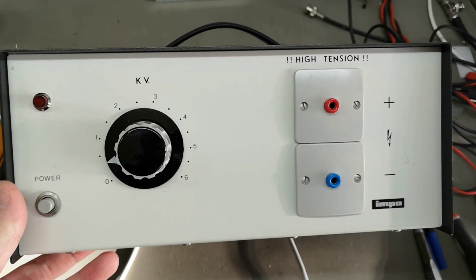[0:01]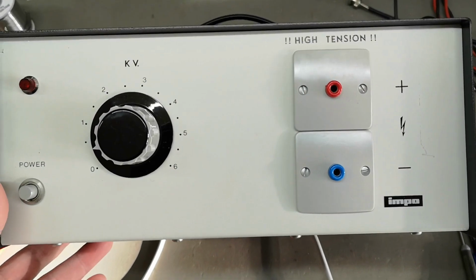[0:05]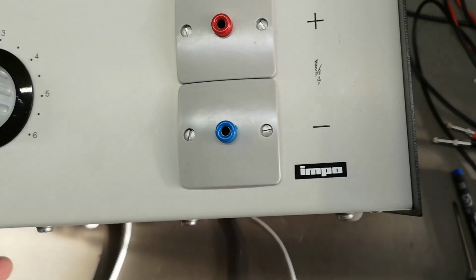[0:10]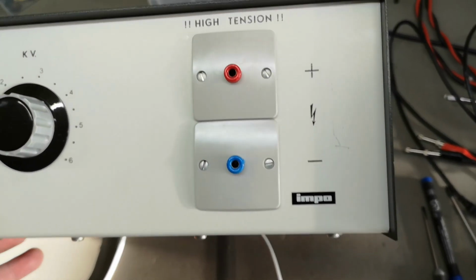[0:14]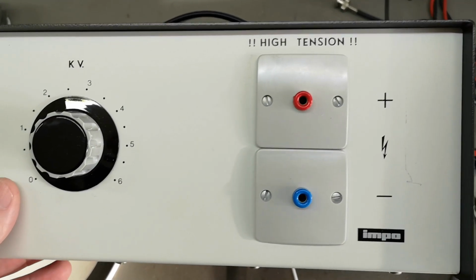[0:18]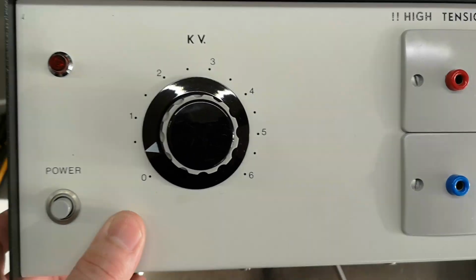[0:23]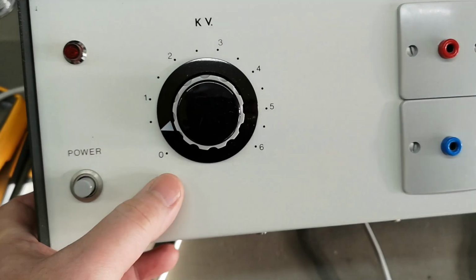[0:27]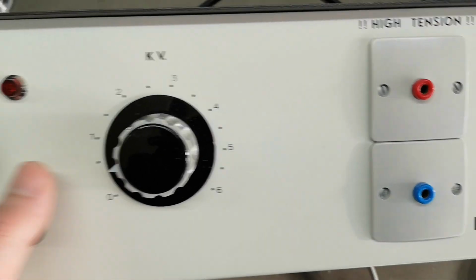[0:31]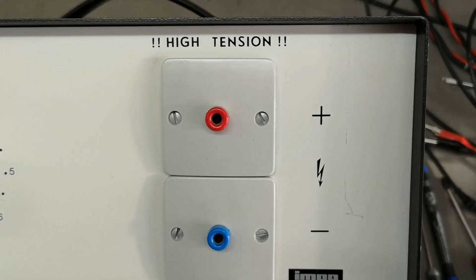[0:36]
This one is another IMPO school laboratory electronics unit, and this is of course a high voltage DC supply. There is no name or number other than that. And I guess it's 0 to 6 kilovolts DC, because we see plus and minus here. High tension.
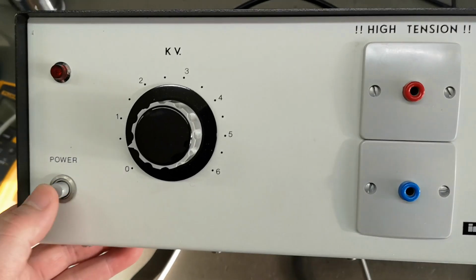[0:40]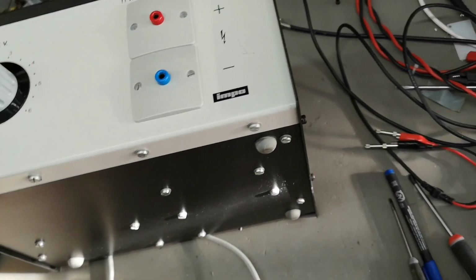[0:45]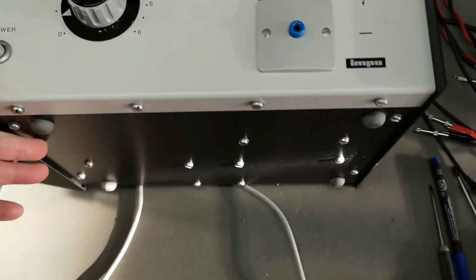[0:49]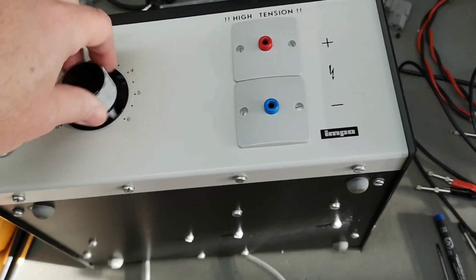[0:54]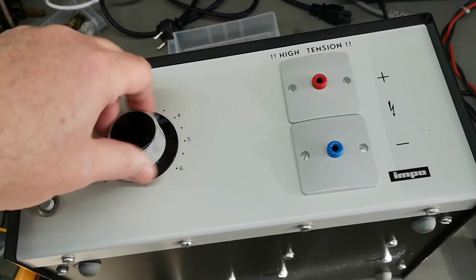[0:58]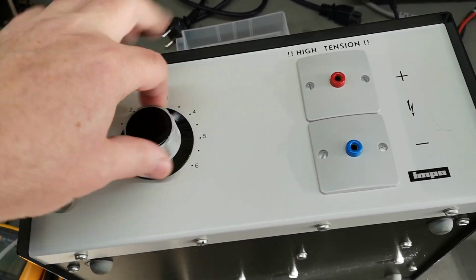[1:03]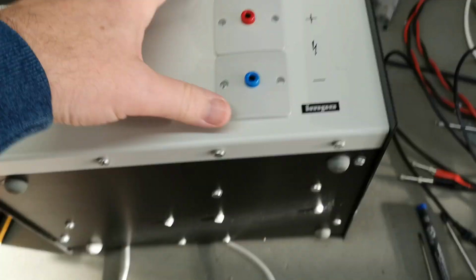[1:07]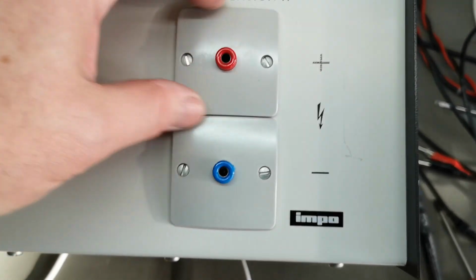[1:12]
And there's no other names or marks or anything on this unit. This feels like it could be one of those Vario transformers, but it feels a little bit weird anyway. Look at that.
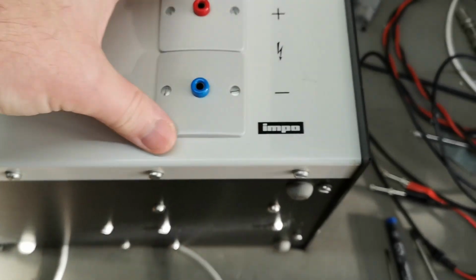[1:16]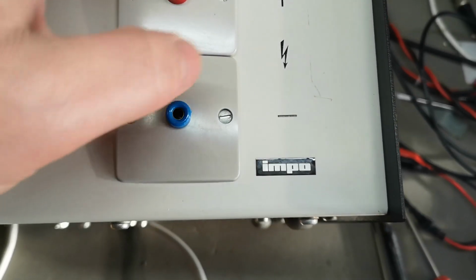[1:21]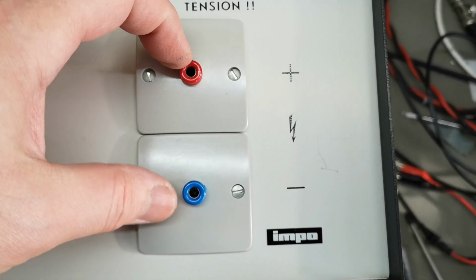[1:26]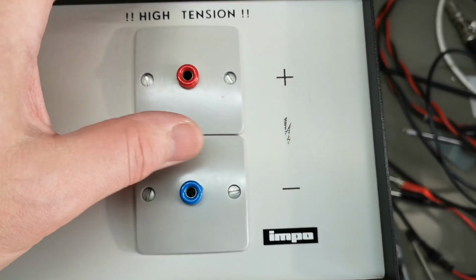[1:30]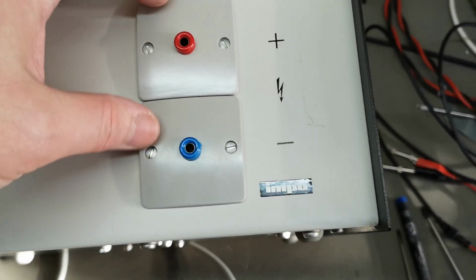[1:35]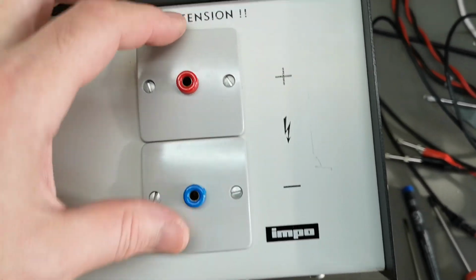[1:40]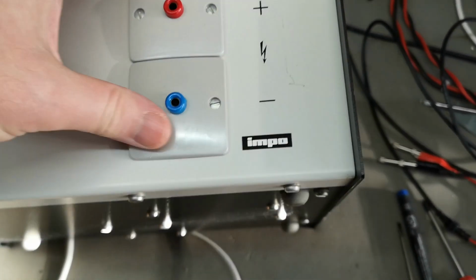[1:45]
So those are the mains voltage install blanks, and then they just drilled a hole and put in the high voltage bananas. And this is actually not a dumb idea, because this type of plastic here is very good for high voltage, a super good isolation, and it's also a fire retardant and very, very safe to use for high voltages. So yeah, why not?
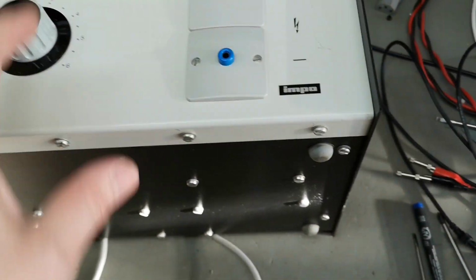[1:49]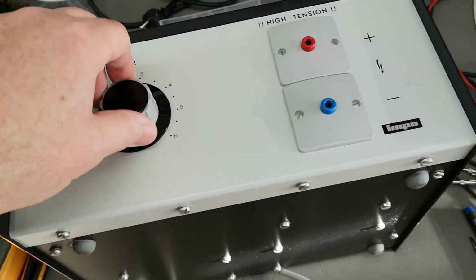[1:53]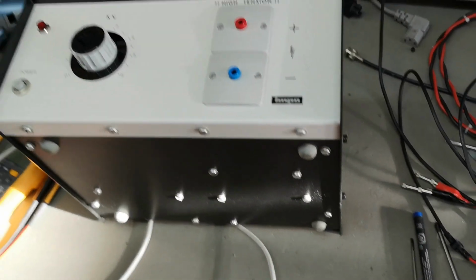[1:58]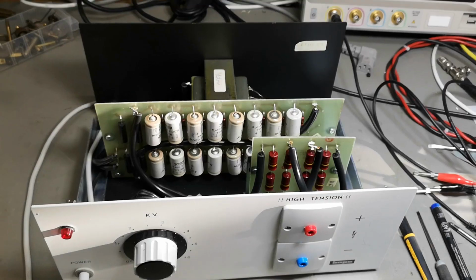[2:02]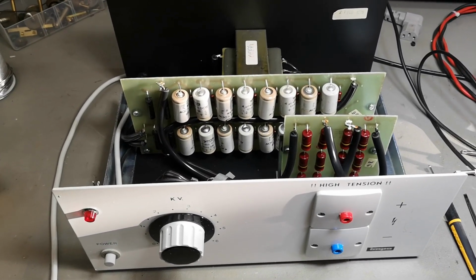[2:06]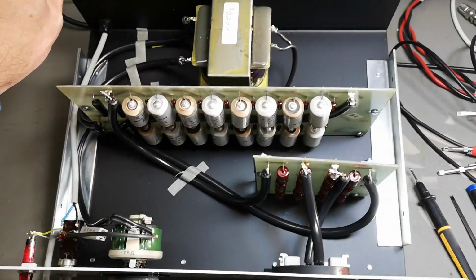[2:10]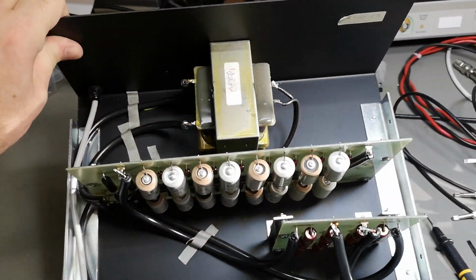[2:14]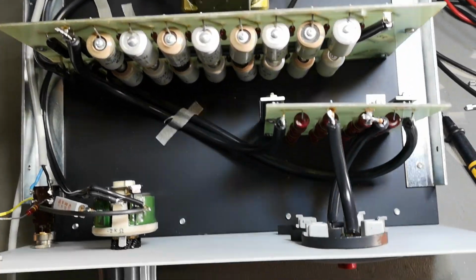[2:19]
I think I need to open this before I plug it in, because this could potentially be a little bit dangerous. So I like to see what is inside before I plug it in. That was a very big surprise to see this unit inside. It is very different from what I guessed.
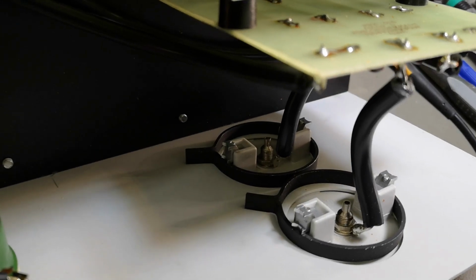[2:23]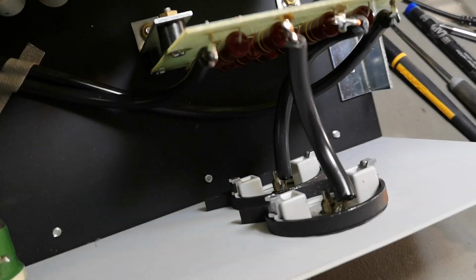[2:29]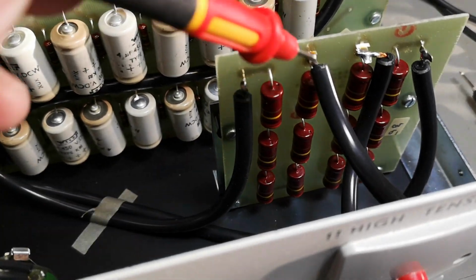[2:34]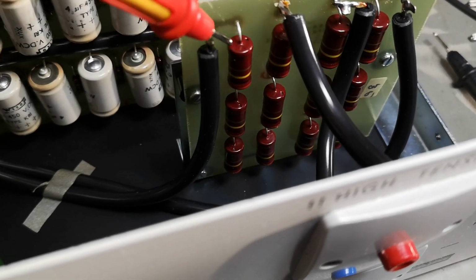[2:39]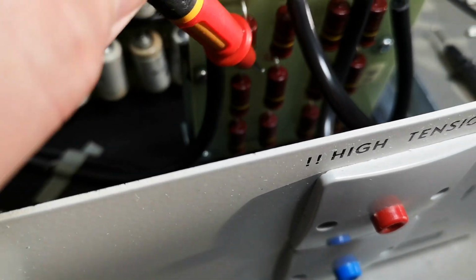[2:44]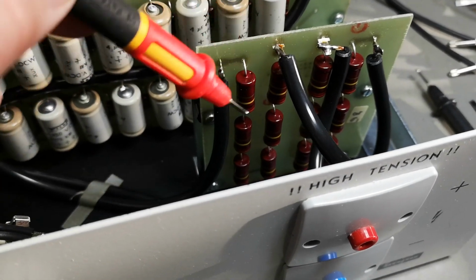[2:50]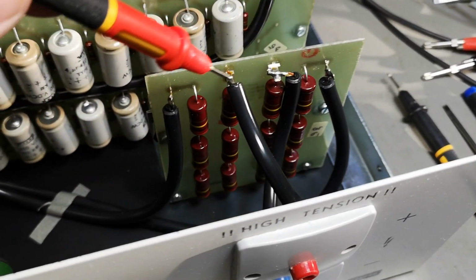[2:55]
That is actually really nice design with the banana plugs. So far so good. So that will be an output current limit board. The high power resistors here, that will be 200 kilo ohms each. So that's 1.2 mega ohm in the positive and 1.2 mega ohm in the negative. So it's symmetric, so that's quite nice.
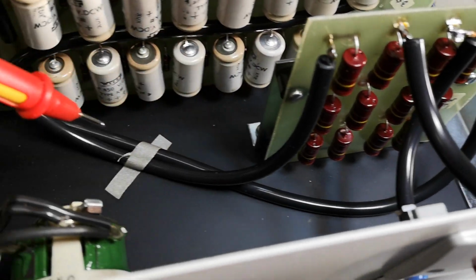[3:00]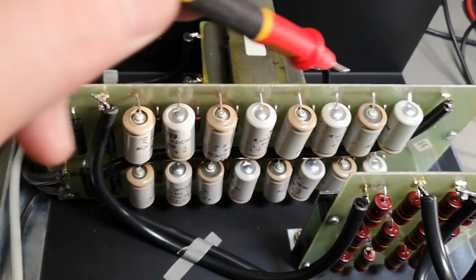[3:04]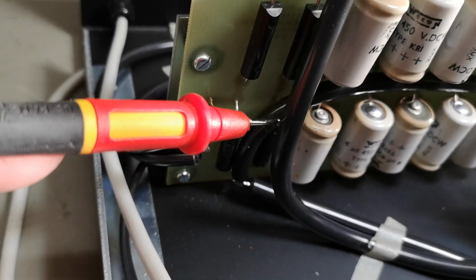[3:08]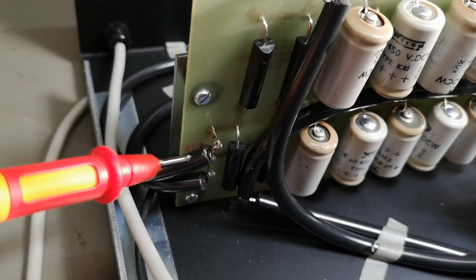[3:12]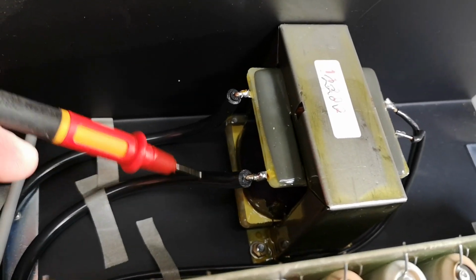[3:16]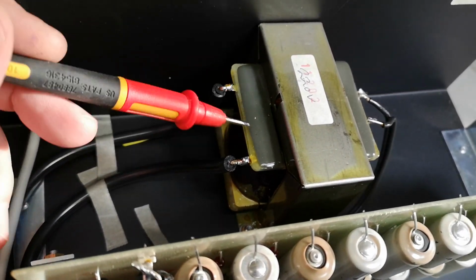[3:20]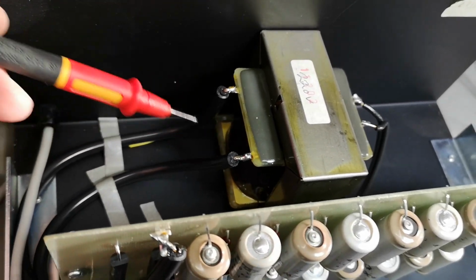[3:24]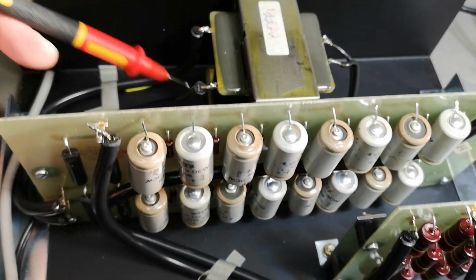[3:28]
And then the high voltage goes to a rectifier and capacitor board. The rectifier is actually a bridge rectifier, and it's connected directly to a big high voltage transformer. So this one does indeed deliver all the high voltage directly. There aren't any doublers, triplers, or any other fancy things.
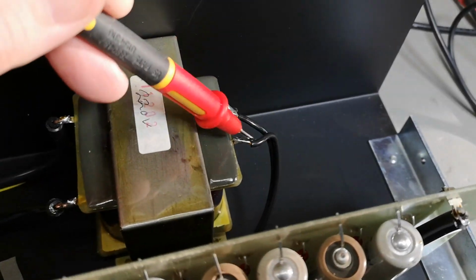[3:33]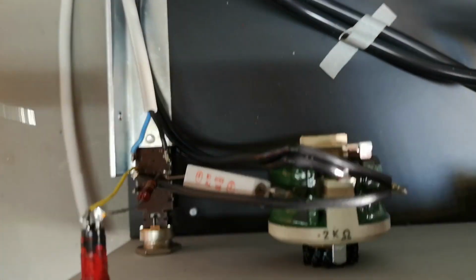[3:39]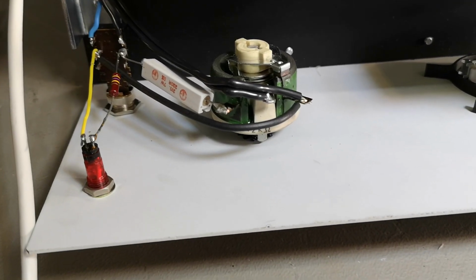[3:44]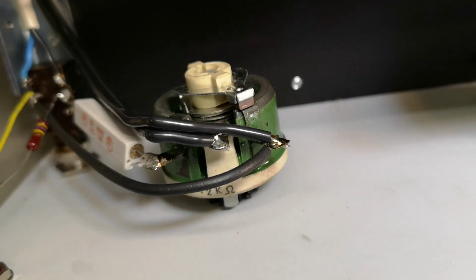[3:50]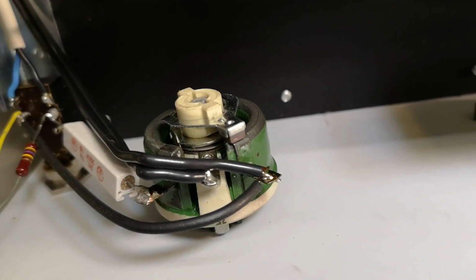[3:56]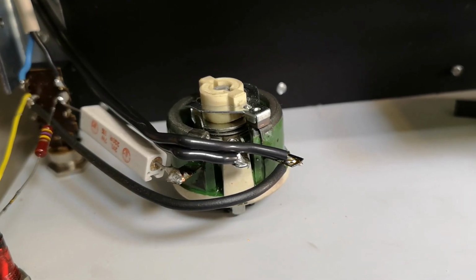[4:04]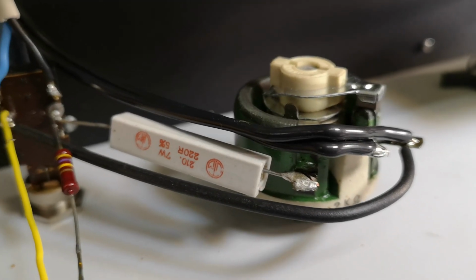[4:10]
And this is a 220 volt type. So this is the mains input. Let's follow that wire. It goes to a voltage divider. Really? So how can that be accurate? If you look at the two big fat wires here to the right, that is the output. So at the moment, as you see the pot here, that is to the low, because now the transformer input is shorted. So in this case, an idle power is going through the resistors.
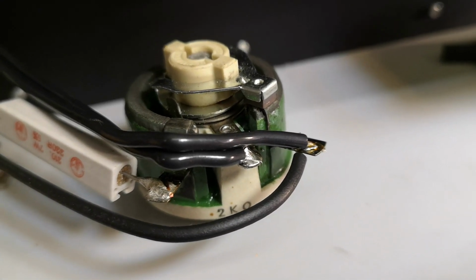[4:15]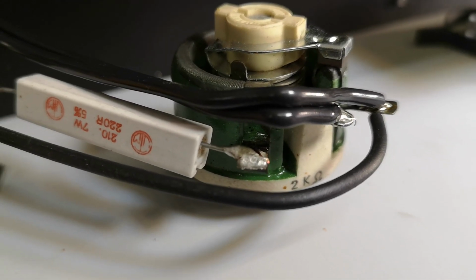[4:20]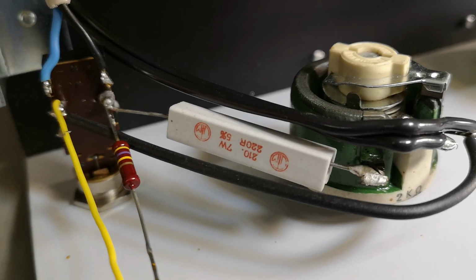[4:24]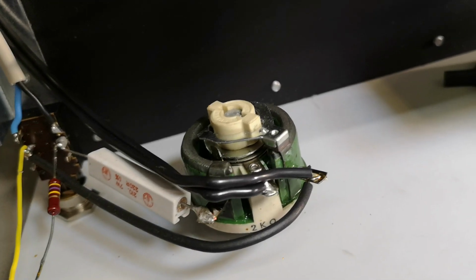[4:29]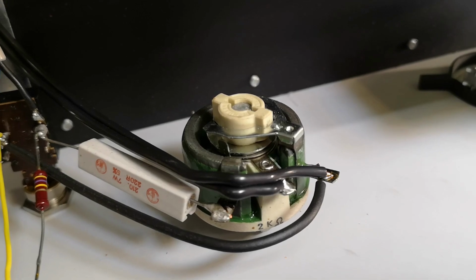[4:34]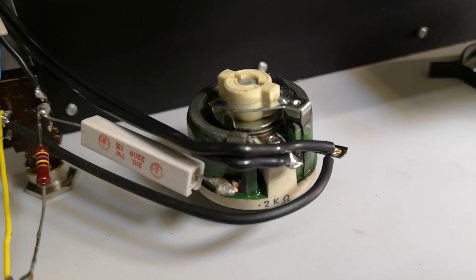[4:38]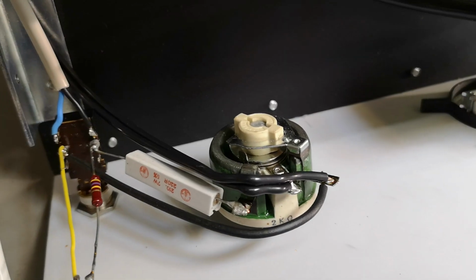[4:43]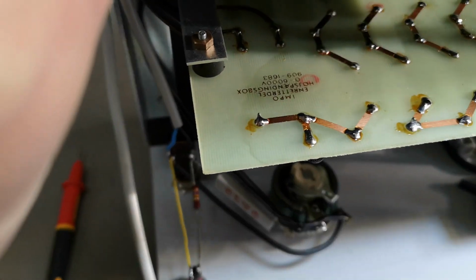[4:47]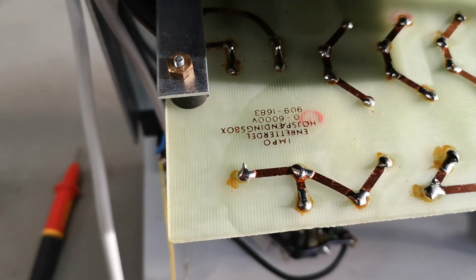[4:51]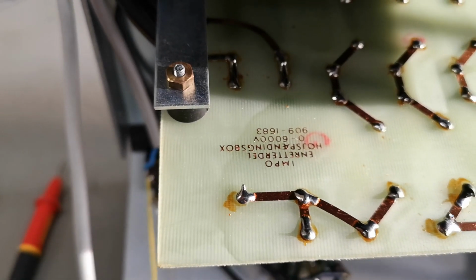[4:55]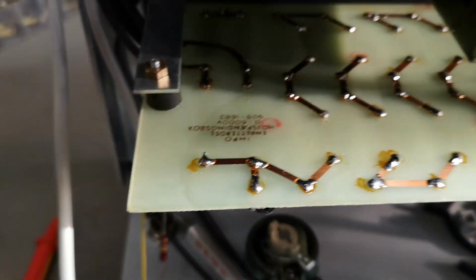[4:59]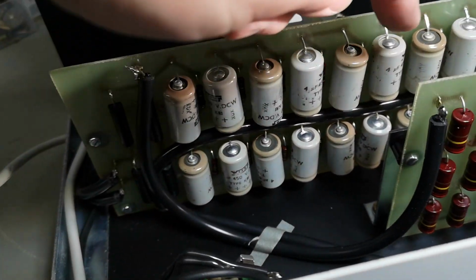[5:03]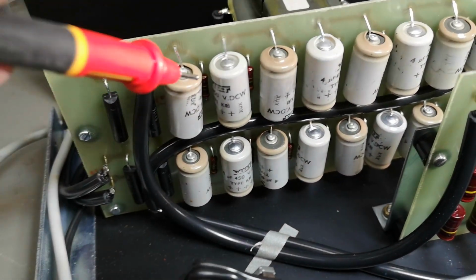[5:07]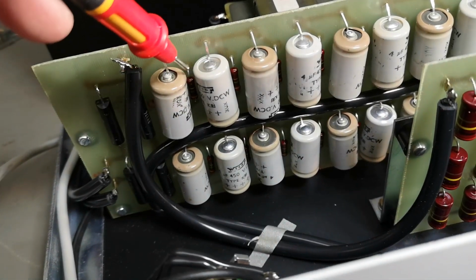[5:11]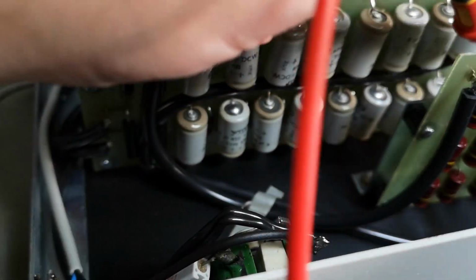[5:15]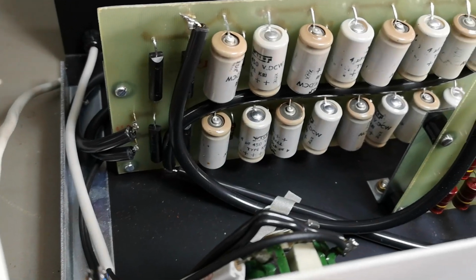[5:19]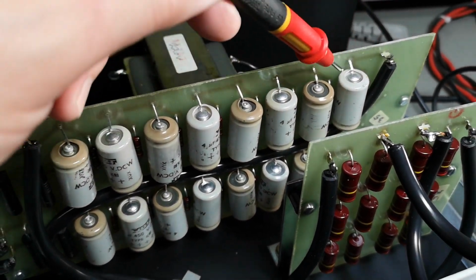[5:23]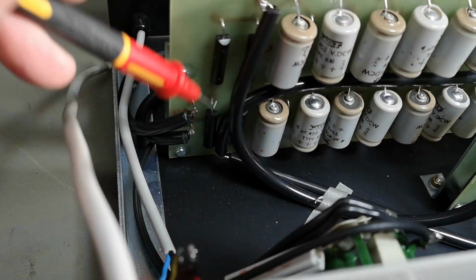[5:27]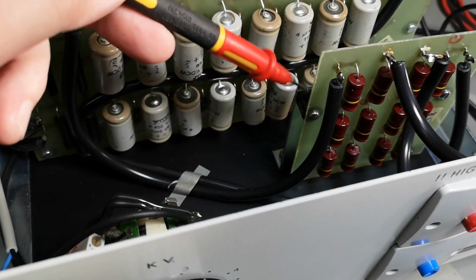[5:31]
So let's look a little bit at the rectifier board. There's a little bit of information here. It says high voltage power supply, 0 to 6 kilovolts, and so on. And all those capacitors are in series, and each of them has an individual 1 mega ohm bleeder resistor. So the voltage will be spread out evenly in case every capacitor is working, obviously. And this is the negative side of the capacitor bank, and it is connected to the negative side of the bridge, and then out to the current limiter board.
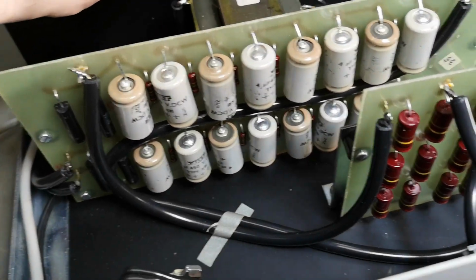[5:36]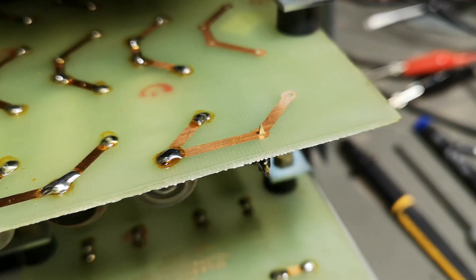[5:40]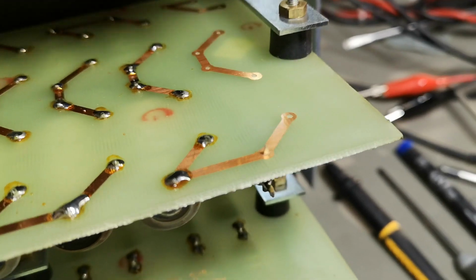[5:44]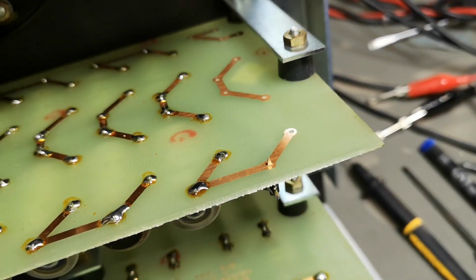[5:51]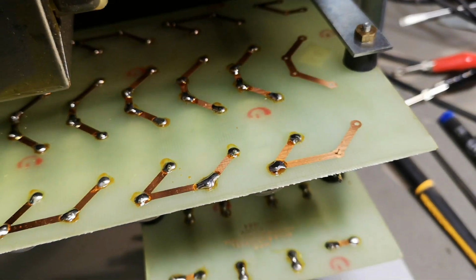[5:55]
But look at that little detail here, what I saw. What do you think about this soldering? I mean, oops. Isn't that a little bit embarrassing? But it didn't fall out. Well, come on, somebody forgot to solder this. This is not good enough. And how can you assemble this?
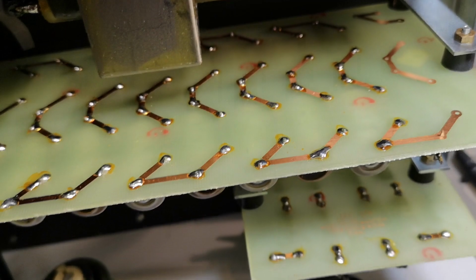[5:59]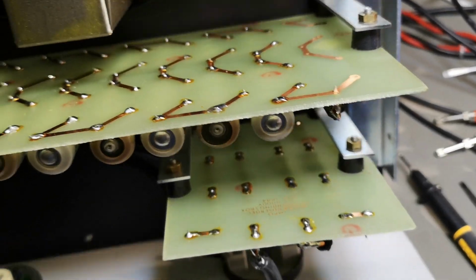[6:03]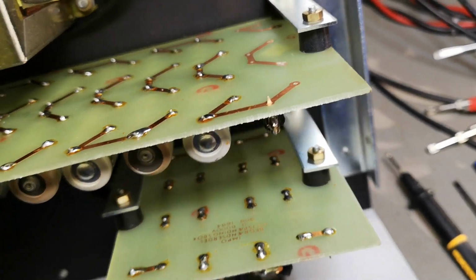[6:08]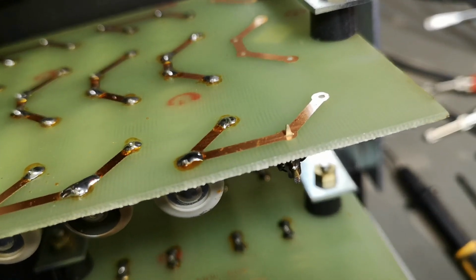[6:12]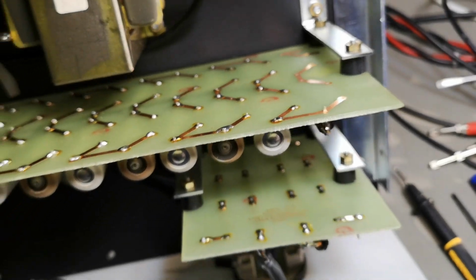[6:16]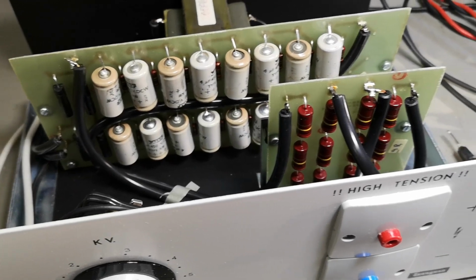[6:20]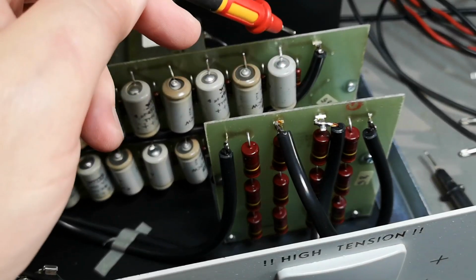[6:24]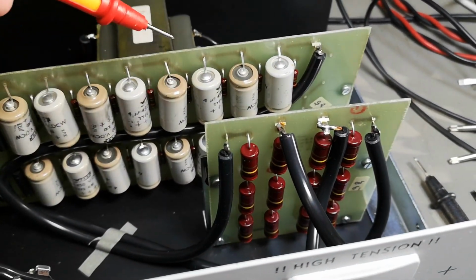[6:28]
First you make the board, and then you put it in the case, then you attach the wire here. I mean, you need to have a little bit of understanding of quality. This is not quality, is it? So what kind of a kit assembled this at a factory? I don't know. Well, that is not a good sign of their education level or understanding of what is good and bad.
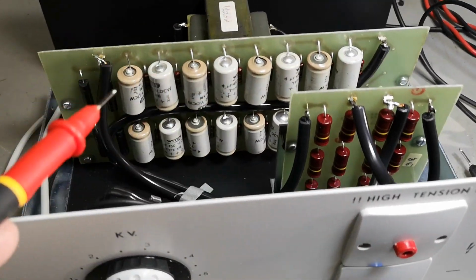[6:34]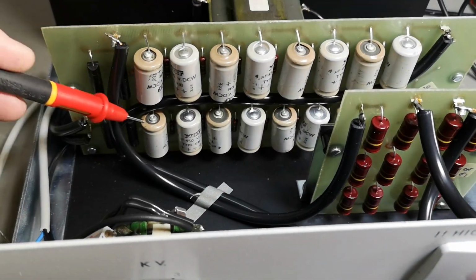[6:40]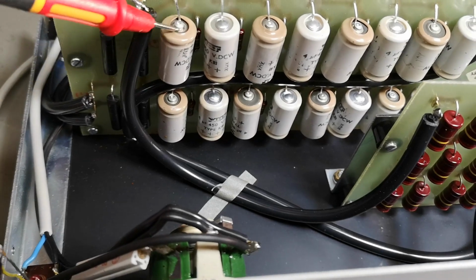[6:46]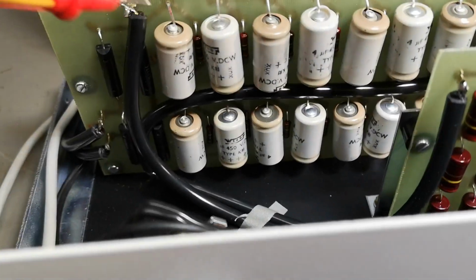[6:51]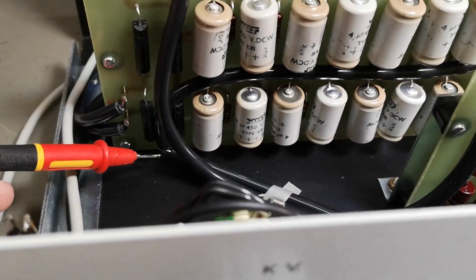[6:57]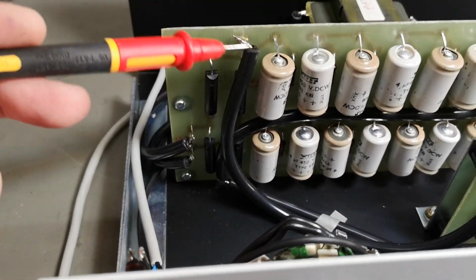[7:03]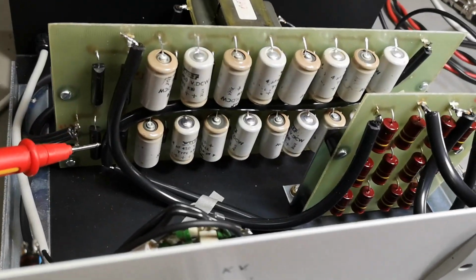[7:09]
So I think I will try and power this up now, really slow and carefully, and see if I get equal voltages on all the capacitors, because otherwise I could very easily create a fatal problem here with shorted capacitors or something like that. So each capacitor here can do 450 volts, so that means I will just crank up the voltage to 450 volts total voltage on this point, and then I will measure if I get exactly the same voltage on all capacitors before I proceed to maximum voltage.
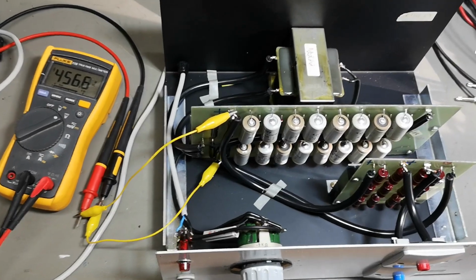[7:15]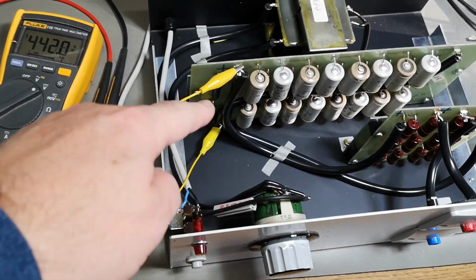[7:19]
I cranked up this pot to maximum. I'm measuring DC on the rectifier.
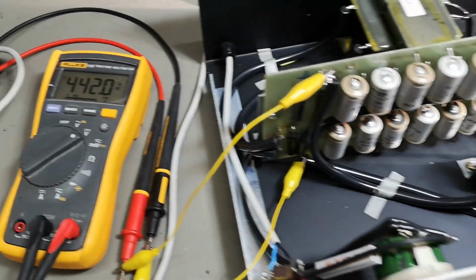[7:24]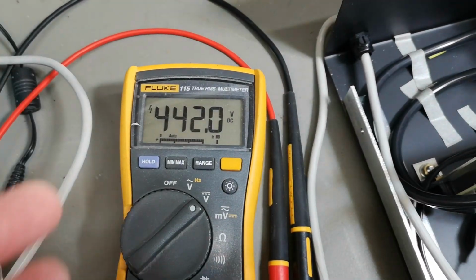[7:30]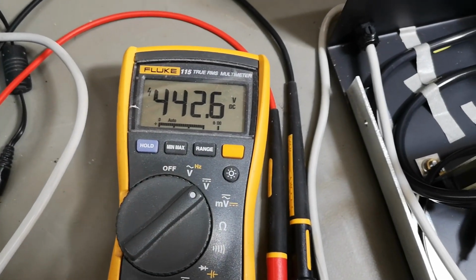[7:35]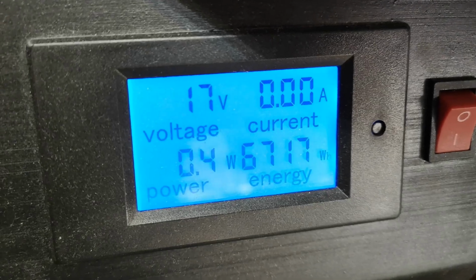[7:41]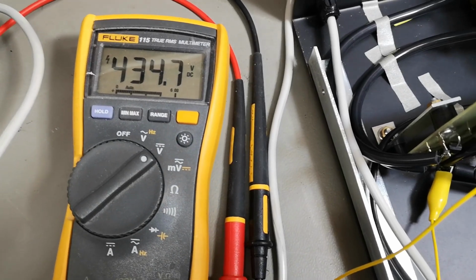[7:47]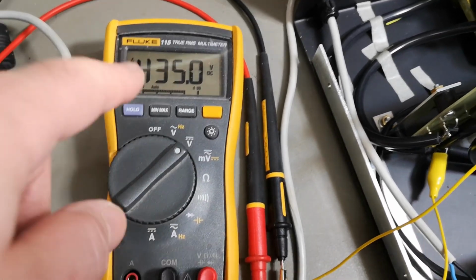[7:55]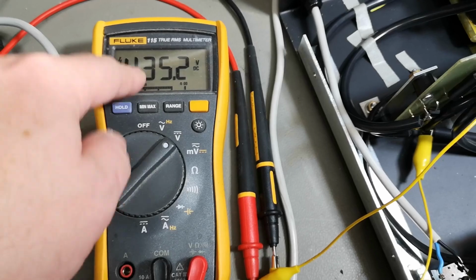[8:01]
We got 442. It varies a little bit, but just before I had 450. And so this is my DC voltage, and look at that, 17 AC input. So that means 17 divided up to what we have, 230 volts. So that is 13.5 times, right? Multiplied by 450, so that is a little bit more than 6,000 volts this thing can potentially create.
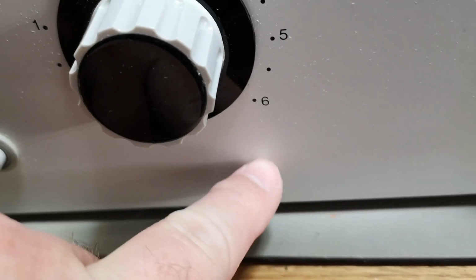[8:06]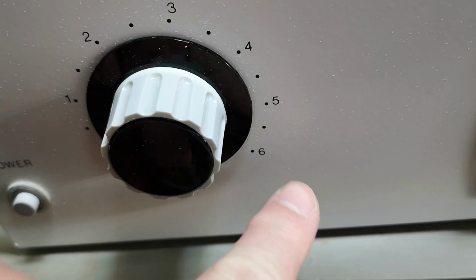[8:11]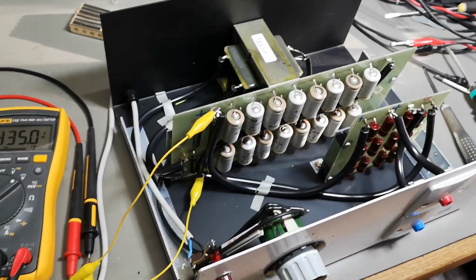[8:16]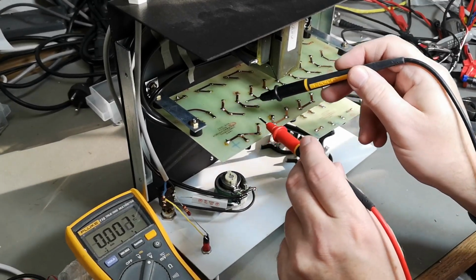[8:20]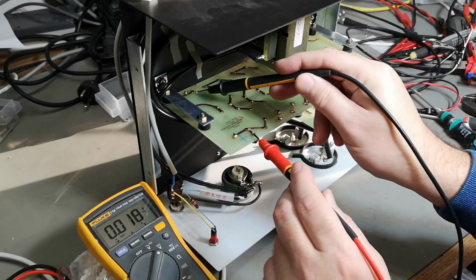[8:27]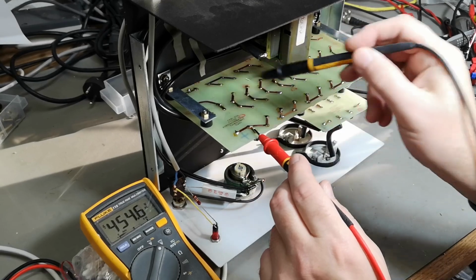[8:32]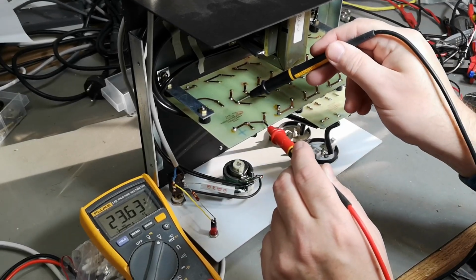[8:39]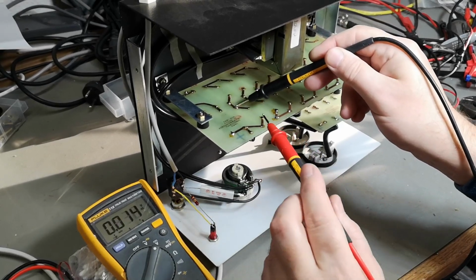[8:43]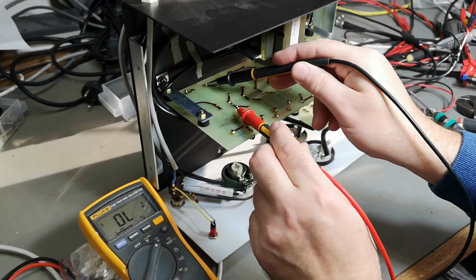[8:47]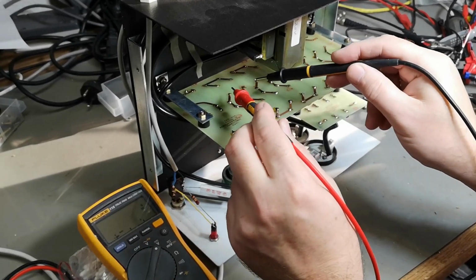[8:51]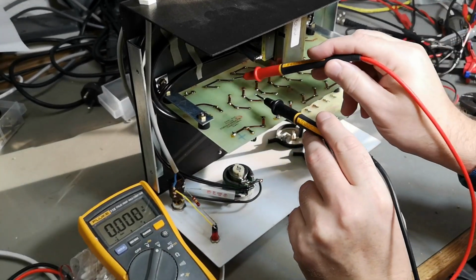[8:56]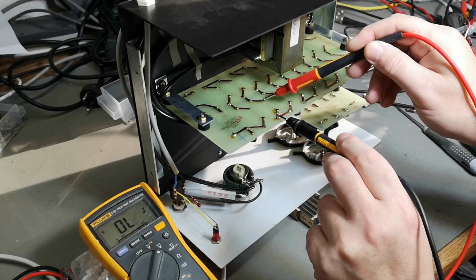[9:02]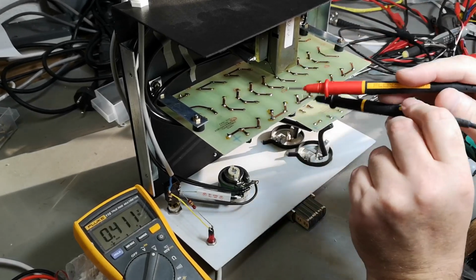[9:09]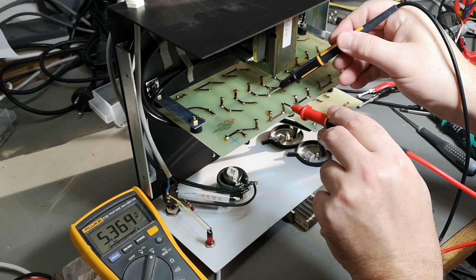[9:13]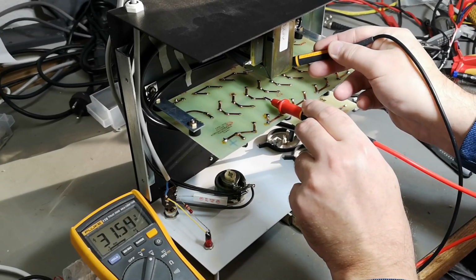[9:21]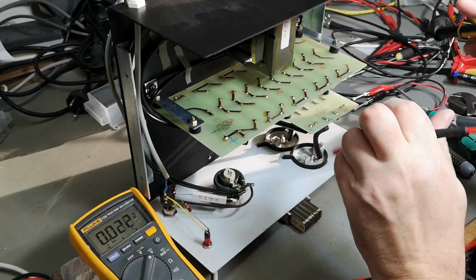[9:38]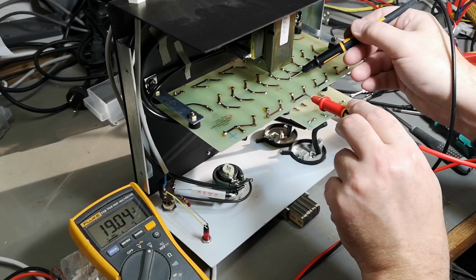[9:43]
Okay, 23. So let's take the next one. Okay, 37. Oh, can I have my hands like this? So now I need to swap plus and minus. 50 volts. 47. And then we go this way. Oops. 5. 32. And 16. 7. So, I mean, there's no need to continue with all these measurements.
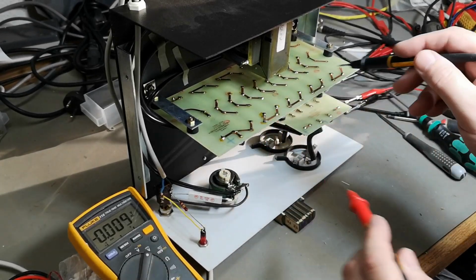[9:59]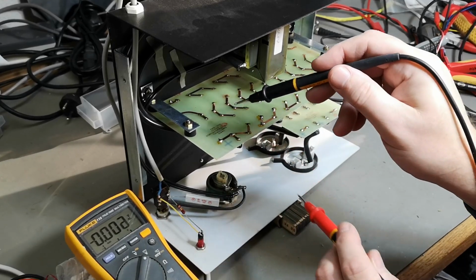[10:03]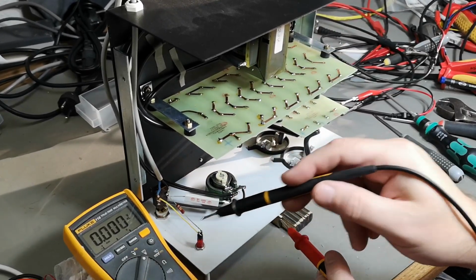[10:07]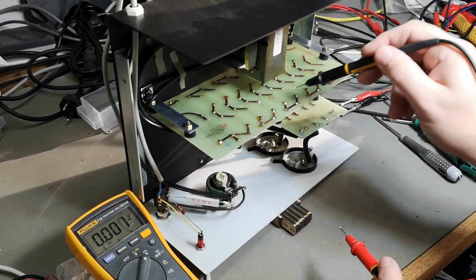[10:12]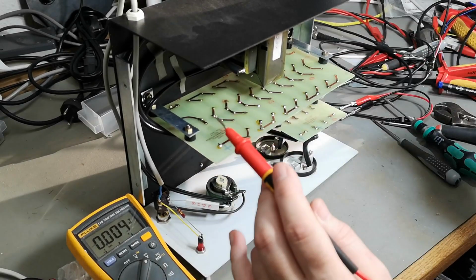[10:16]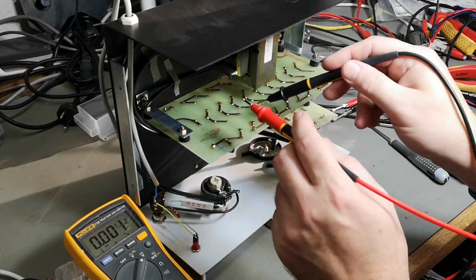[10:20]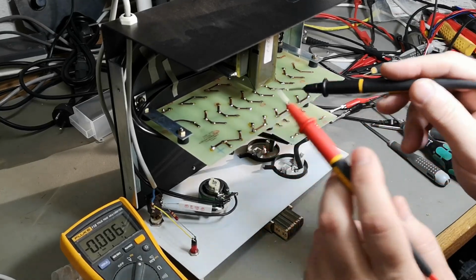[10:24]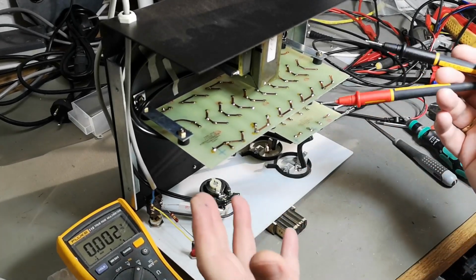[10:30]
All the capacitors need to be changed. See, the voltage is between 50 and 5. So yeah, capacitors are completely defective. So this was really a good idea to start with a low voltage, low enough that each and every one of the capacitors could handle it. So I didn't blow up anything. If I crank up the voltage now to its full potential, some of the capacitors will be completely over voltage and blow up in my face. So this is a very bad idea. So definitely we need to remove all the capacitors before we can proceed with this project.
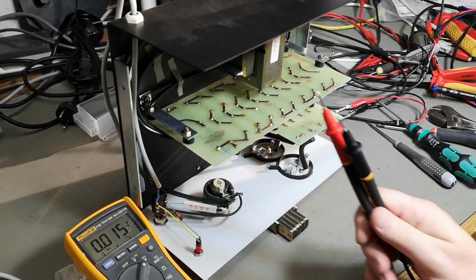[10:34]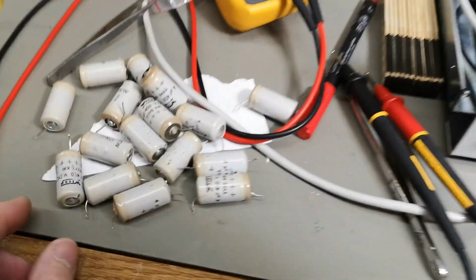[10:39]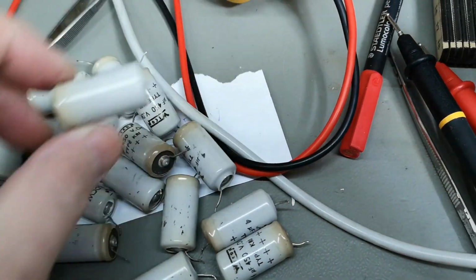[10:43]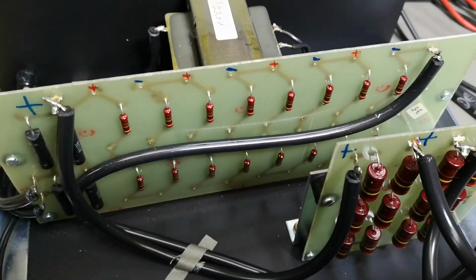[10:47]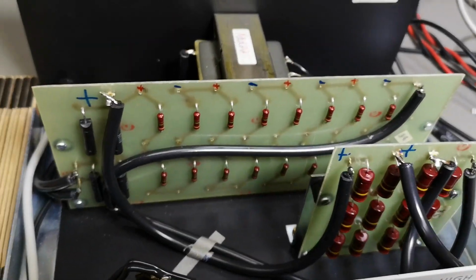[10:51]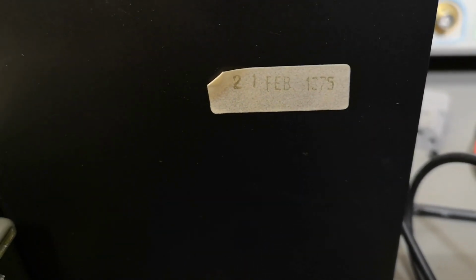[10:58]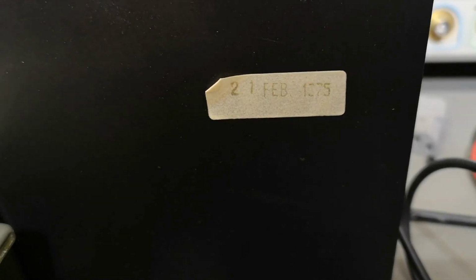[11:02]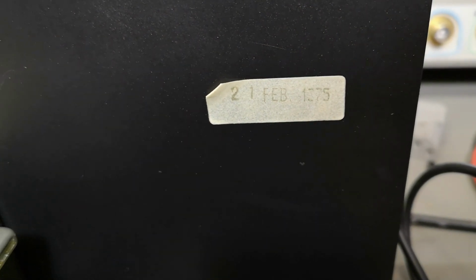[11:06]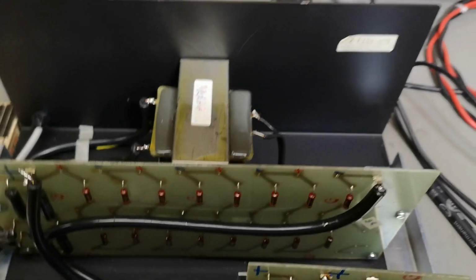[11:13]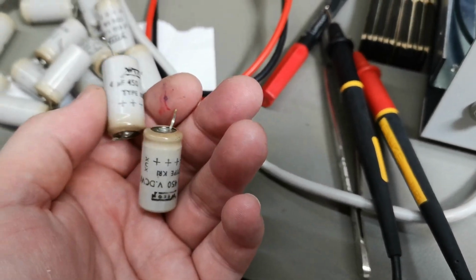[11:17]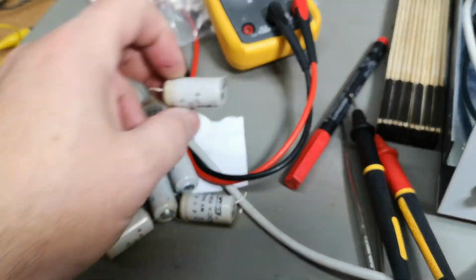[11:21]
So so far so good. Now all the capacitors are out. That was actually quite easy. I added a little bit of notes here, so I'm not going to screw this up when I get some new capacitors. By the way, look what I found. This is a little bit funny because they wrote 1375. Of course it's 1975, but still funny, isn't it? So this is from 75. So it's quite old. Maybe it's not that bad actually to have leaky capacitors. When you think about it, it's 45 years old or something.
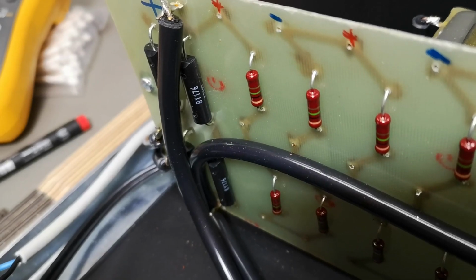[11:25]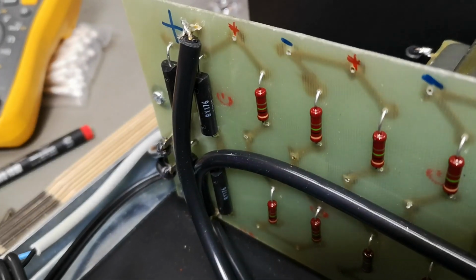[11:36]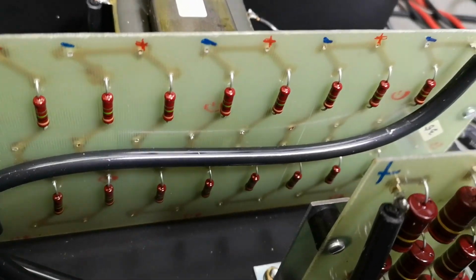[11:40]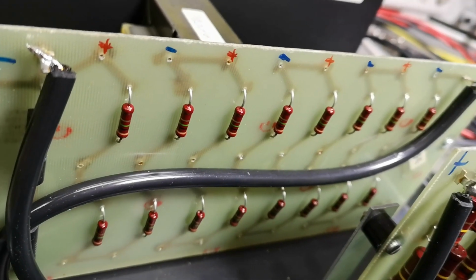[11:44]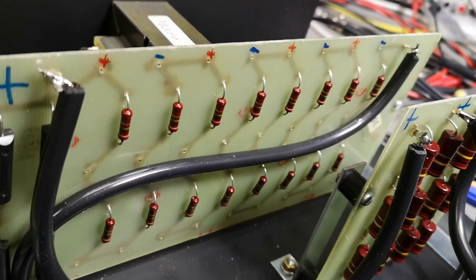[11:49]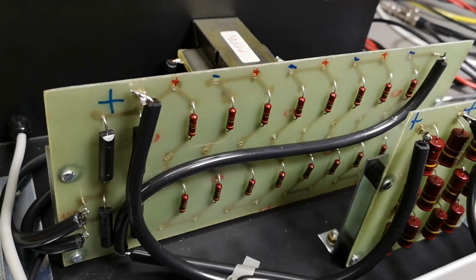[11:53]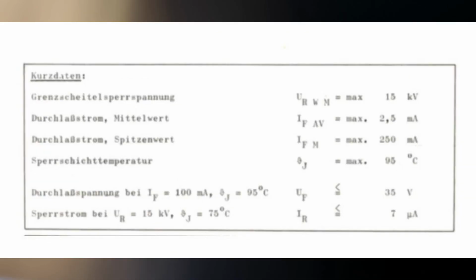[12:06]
Okay, let's look at the rectifier diodes. BY176. Definitely some super nice high voltage diodes. And with all the capacitors out, I did double check all the resistors, and they're exactly 1 megaohm each. So it was definitely the capacitors that were leaky. Here is the BY176 diode, and as we see here in the spec sheet, it's 15 kilovolts, so that's perfectly fine. Constant current of 2.5 milliamps and a short-term peak pulse of 250 milliamps.
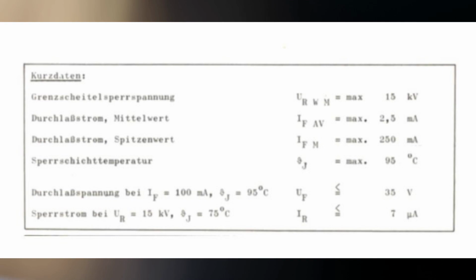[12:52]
And now it all makes a lot of sense because the transformer secondary winding is 25 kilohms and 6,000 volts. So that will be the 250 milliamp peak charge current you could possibly pull out of this system no matter what, right? Obviously this is far from possible due to the primary side resistor, and the 2.5 milliamp constant average output current is due to the current limiting resistors of 2.4 megaohms on the output, and that gives 2.5 milliamps at 6,000 volts.
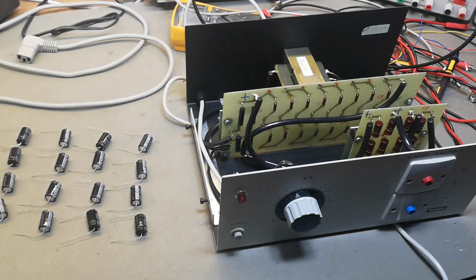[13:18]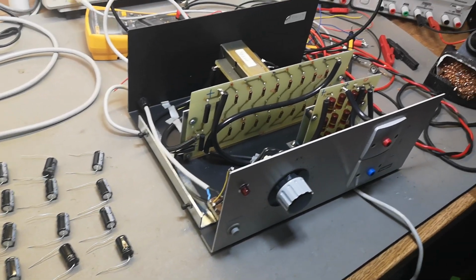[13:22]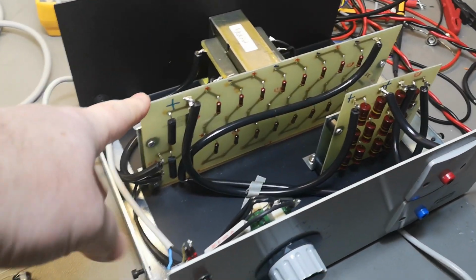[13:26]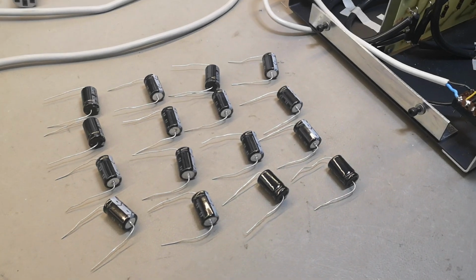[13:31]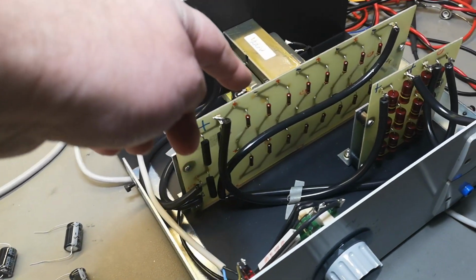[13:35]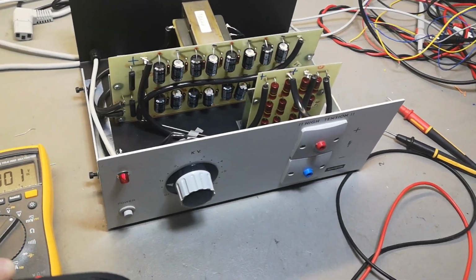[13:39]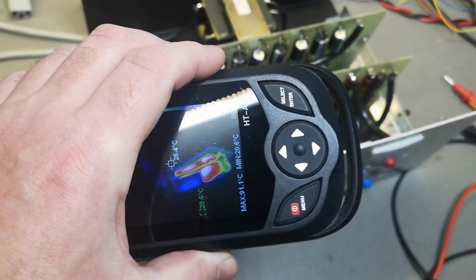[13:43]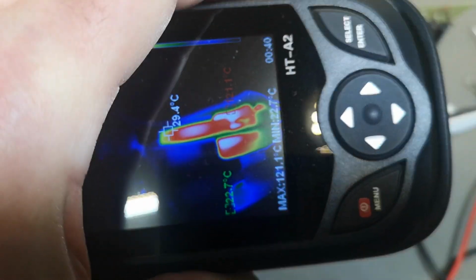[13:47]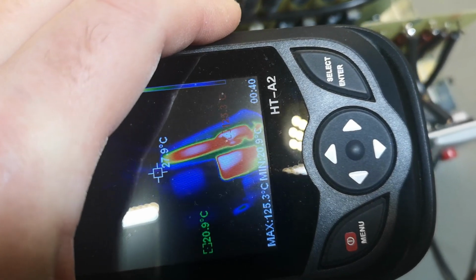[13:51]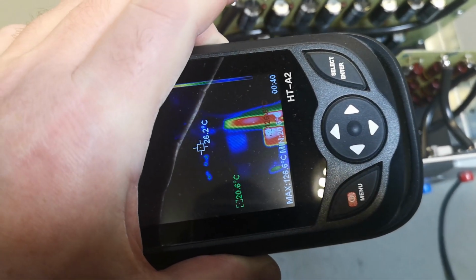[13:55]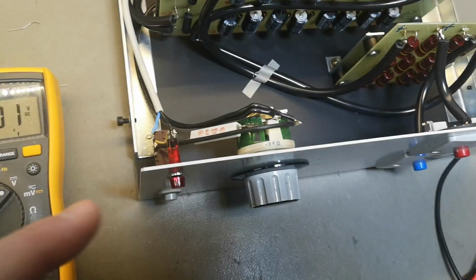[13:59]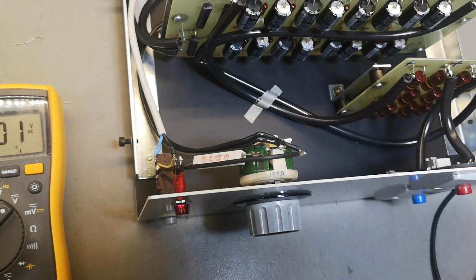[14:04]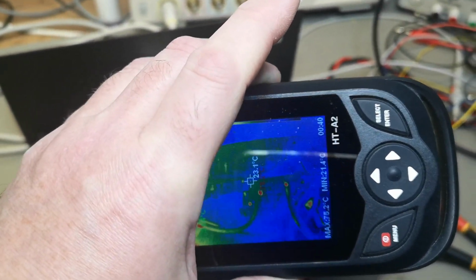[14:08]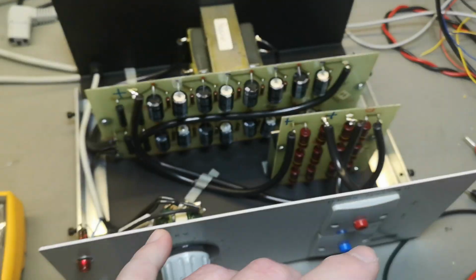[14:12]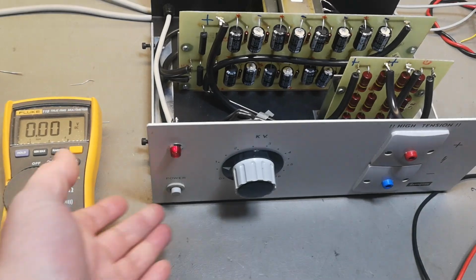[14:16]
I finally got all the capacitors needed for this project, so now I can continue restoring this really cool high voltage power supply. All I need to do is mount all those capacitors in here, and then we're good to go. New capacitors in, and I'm starting to measure the voltages and all that, but then it smells a little bit weird here. So look at the temperatures. Oy, oy, oy, oy, oy. 130 degrees, and I just turned this on. Those resistors are just way too hot. What the heck is going on here? And none of the resistors, capacitors, anything here is hot. This is not good. What is going on? I gotta turn this off.
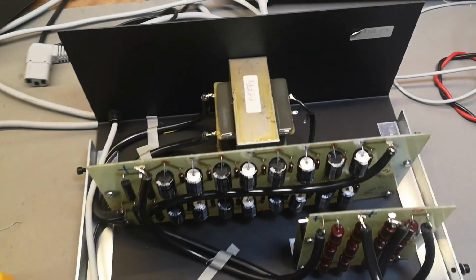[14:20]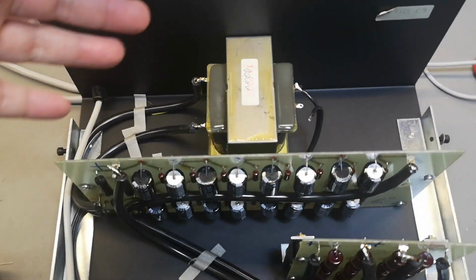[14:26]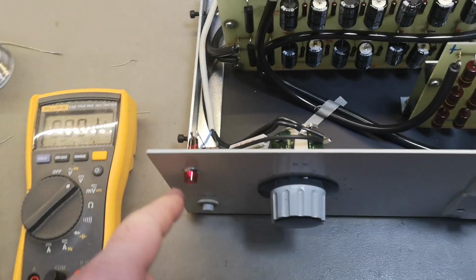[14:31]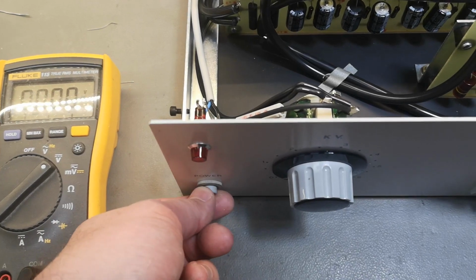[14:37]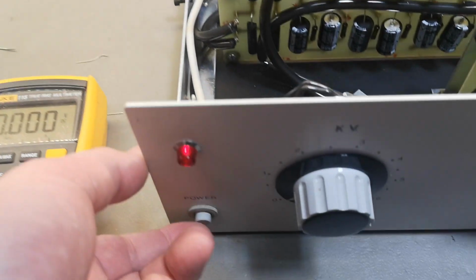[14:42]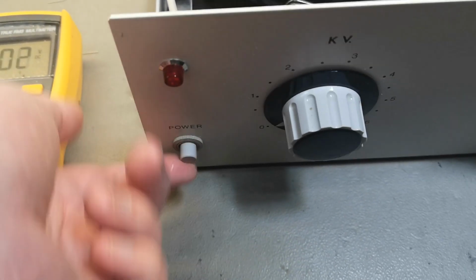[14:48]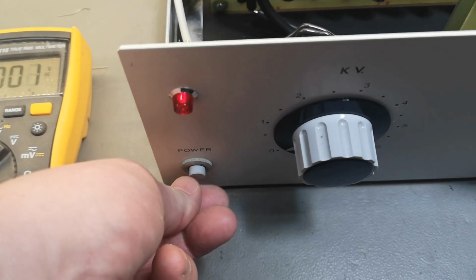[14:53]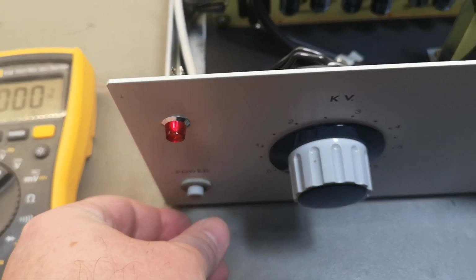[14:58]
I disconnected the mains input for the transformer just to make it safe to debug this system here. So now it's actually turning on. Look, oh, now it's turning off. So that switch is just absolutely unstable. Look at that. And now it's off. Okay. I need to service that.
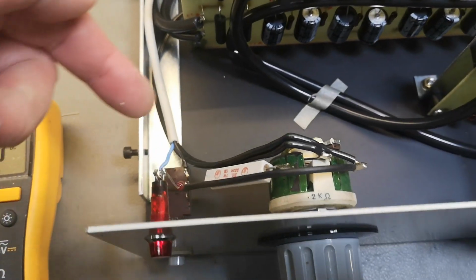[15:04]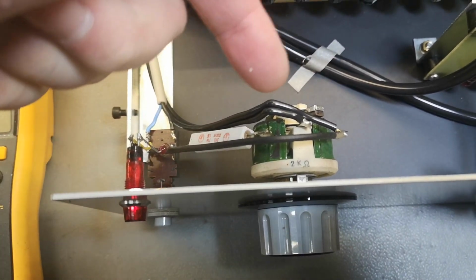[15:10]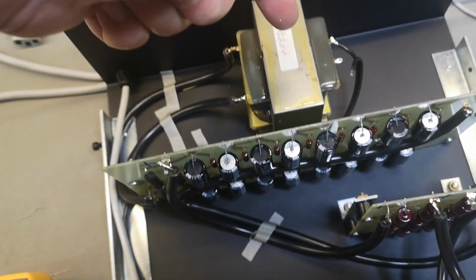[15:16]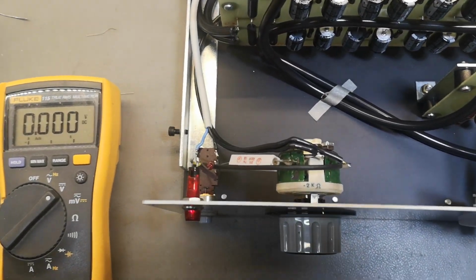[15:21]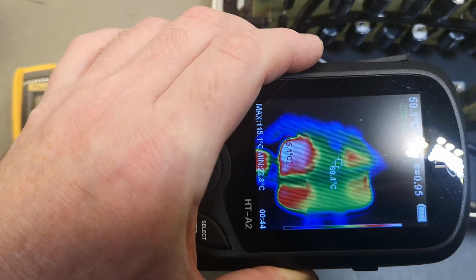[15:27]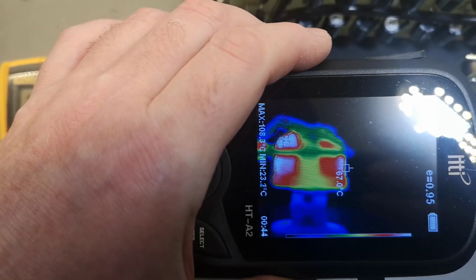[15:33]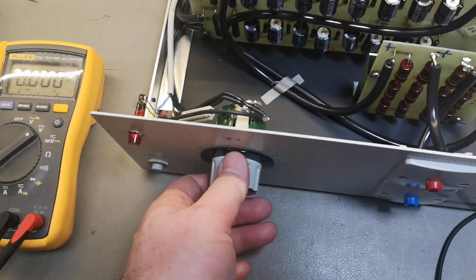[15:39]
23 watts of idle power is burned into this primary side resistor. That is a voltage divider on mains voltage that goes to the transformer. That is not good. This is definitely not ready for 23 watts. And it gets very, very warm. Look at that. Immediately. That is definitely the most stupid and wrong design. I mean, we are forced to solve this somehow, right?
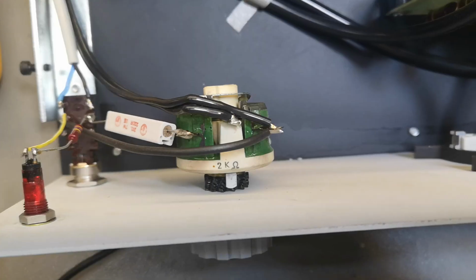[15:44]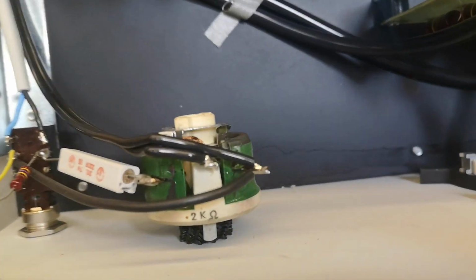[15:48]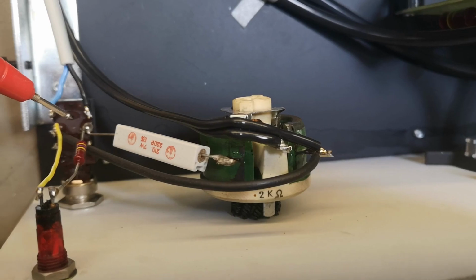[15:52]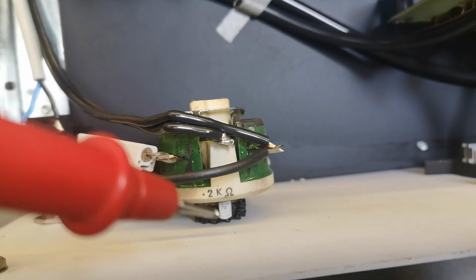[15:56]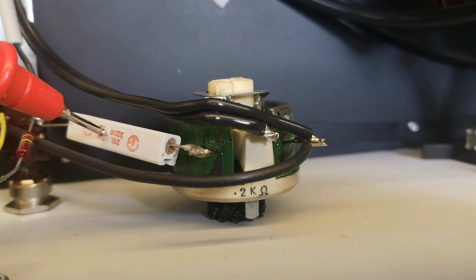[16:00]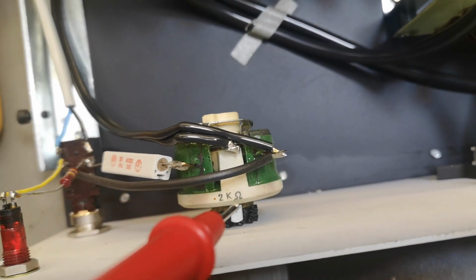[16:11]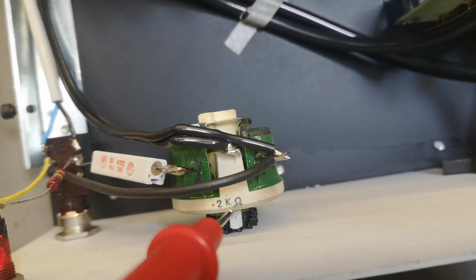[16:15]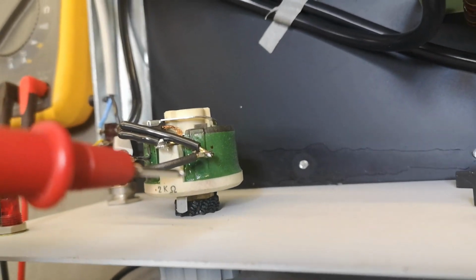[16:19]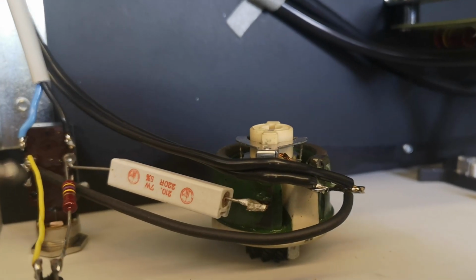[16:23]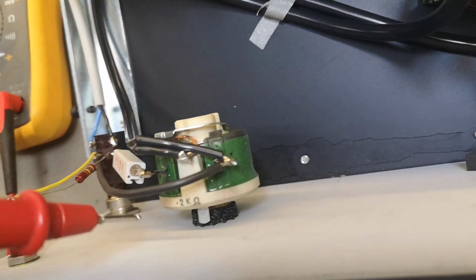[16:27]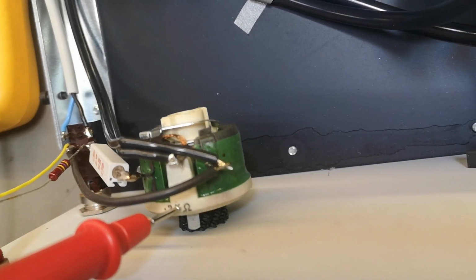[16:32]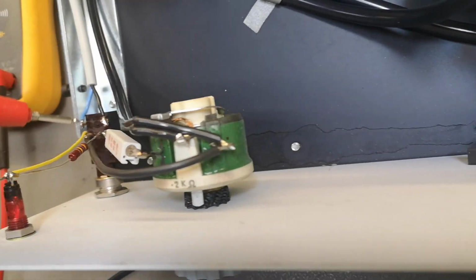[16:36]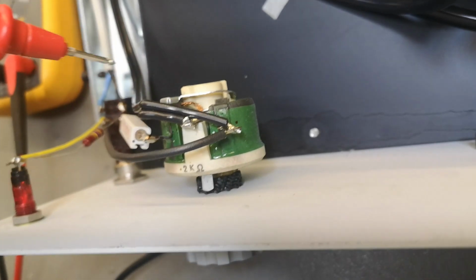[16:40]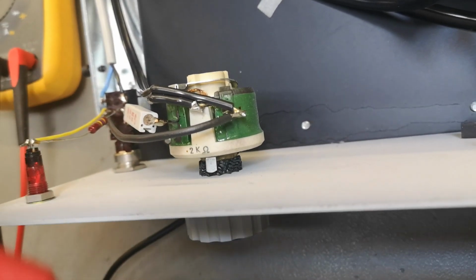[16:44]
Now I've been googling a little bit around, and it's actually not that bad. When it comes to this, it's 230 volts RMS, right? And then we got 2K here and 220 here, so it's less than 3 watts in this 7 watt resistor, right? So that means 20 and some watts is burned off in this. I mean, it looks a little bit small for 20 some kind of watts, right? But they're actually rated for this, and they can handle quite a lot of crazy high temperatures. But I just don't really like this design. But this is not the same as it being a wrong design. I just recommend you don't run this for hours.
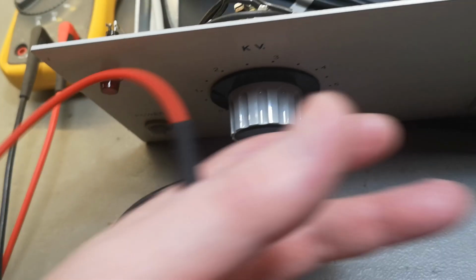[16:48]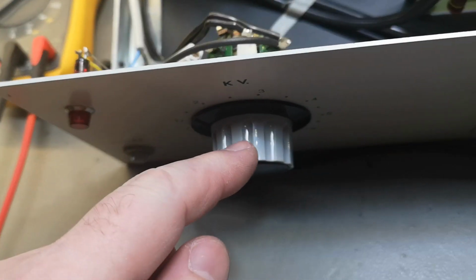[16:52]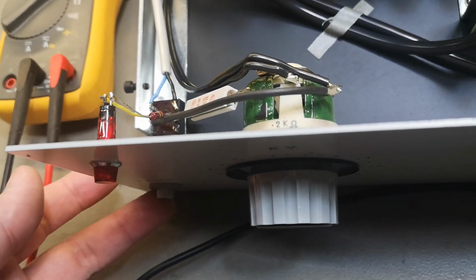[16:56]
Adjust the right voltages and do whatever you want, and then turn it on and off, so it's not powered on for more than just a few minutes, and then just turn it off here. So then you're gonna be fine.
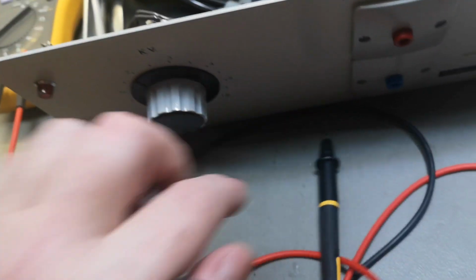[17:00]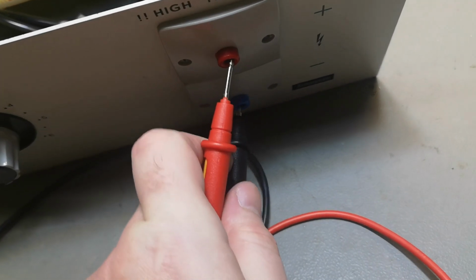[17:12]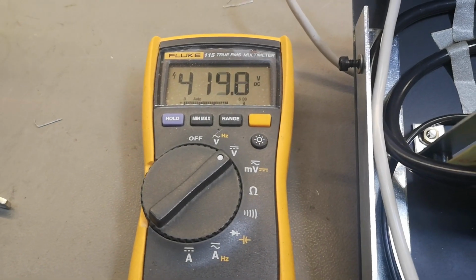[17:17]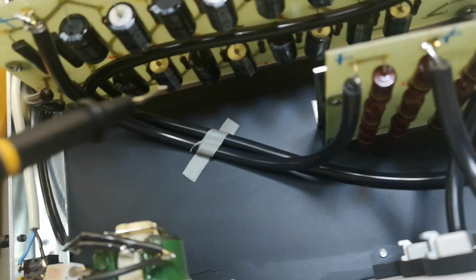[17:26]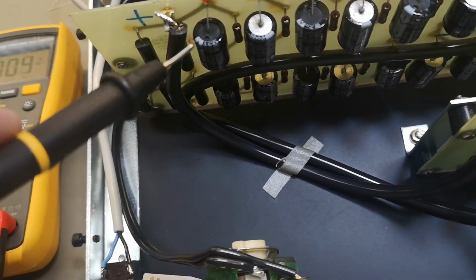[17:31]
So what I did is I just got 18 volts of AC mains input, DC voltage here, and then I just measure the output voltage, 413. Alrighty then, and this is cranked up to maximum. So that means no matter what happens, my total voltage is less than what one capacitor can handle, right?
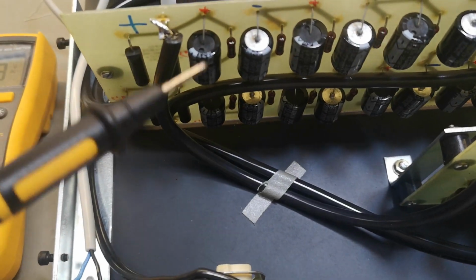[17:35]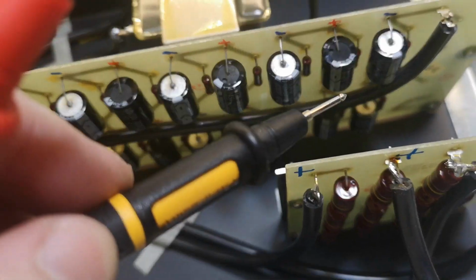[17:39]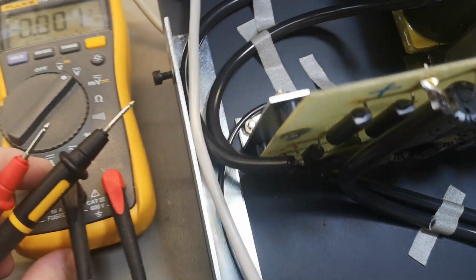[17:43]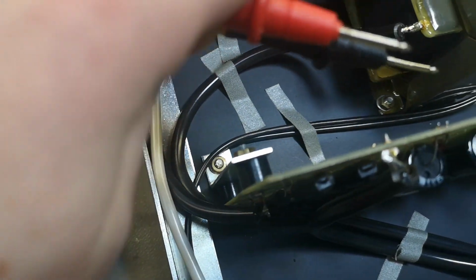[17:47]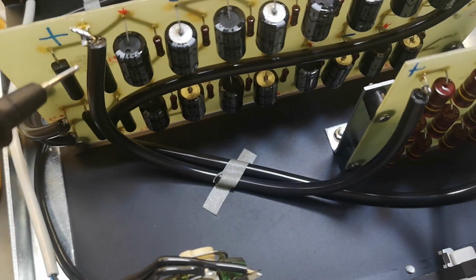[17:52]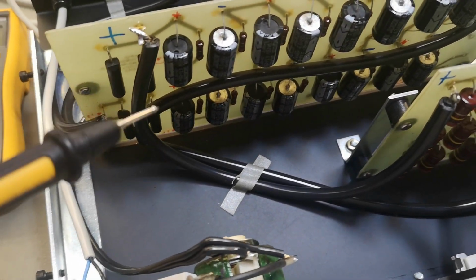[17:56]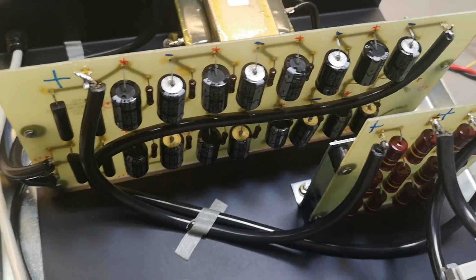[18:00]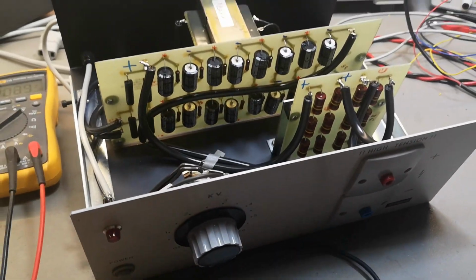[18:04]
So now I'm just measuring around all the voltages on all the individual capacitors, that they're exactly the same. And they're about 30 something volts, each of them, when I probe around here. And that means the voltage is equally divided between all the new capacitors. So that is a good thing. And that means now I dare to crank this up to its maximum potential.
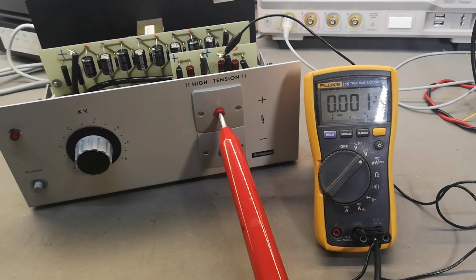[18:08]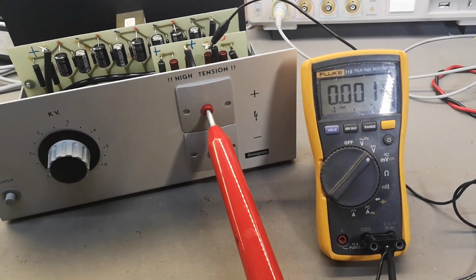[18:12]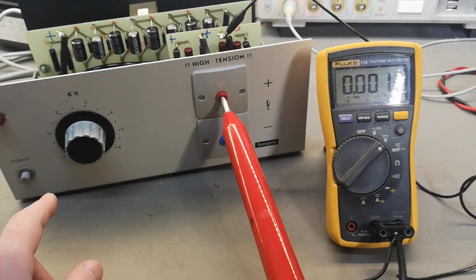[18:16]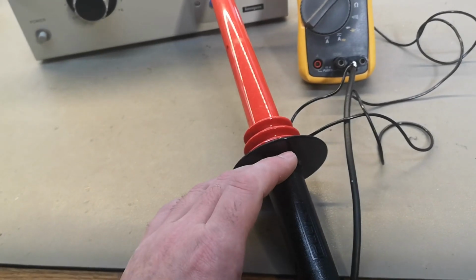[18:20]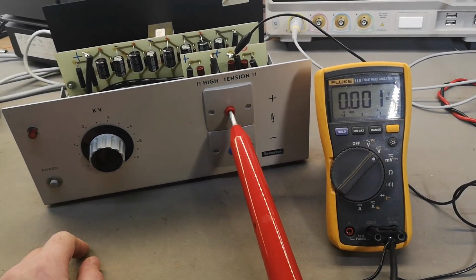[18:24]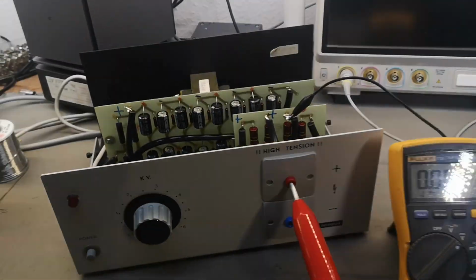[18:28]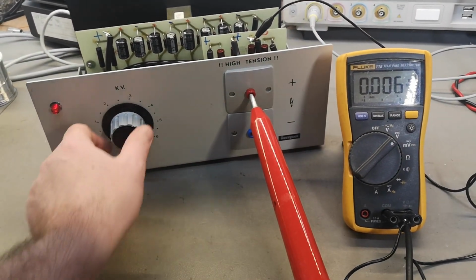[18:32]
Yes, indeed. And yes, you are of course going to be here for the very first test live. It's more fun this way, isn't it? So this is my high voltage Fluke probe. Nah, I was an idiot. Now mains is applied. And here we go.
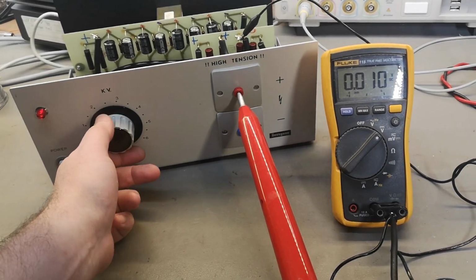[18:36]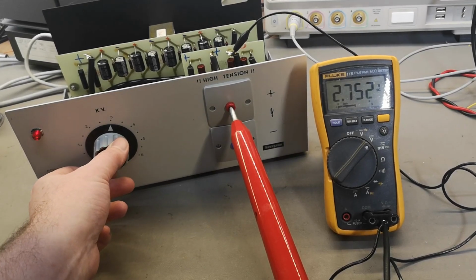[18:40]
My 23 watts of idle. Let's crank up the juice. So that's about 3000. And look how accurate the readout is here. And that is really, really nice.
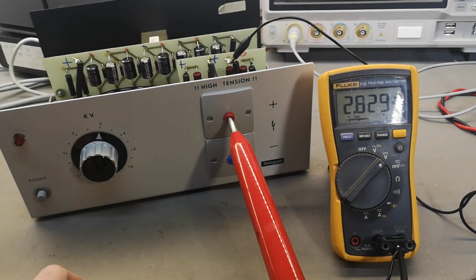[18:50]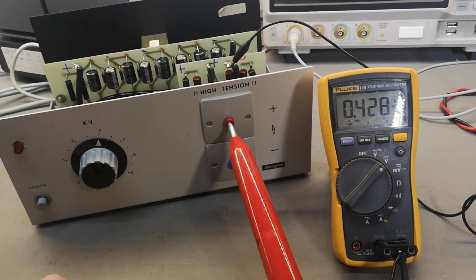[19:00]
What if I turn this off? How long is it going to stay dangerous? I mean, that is quite some time. That is 100 volts. Still enough to tickle a little bit, right? So let's see if it can handle it. Yes, that is good. Of course it can handle that.
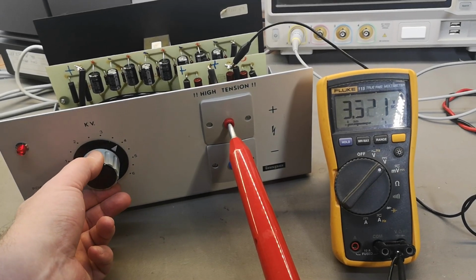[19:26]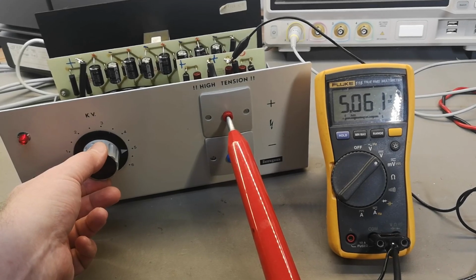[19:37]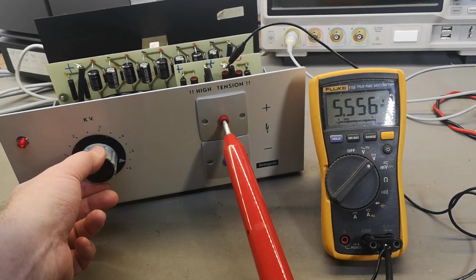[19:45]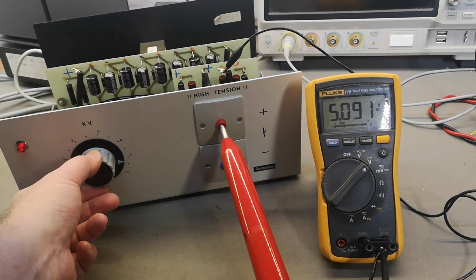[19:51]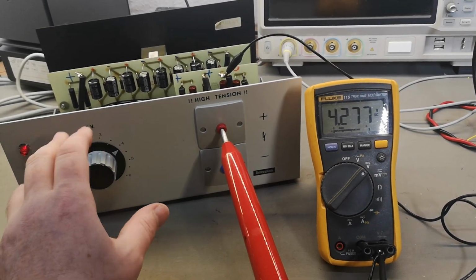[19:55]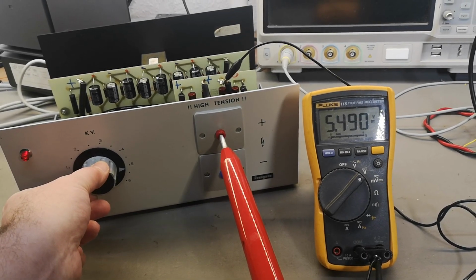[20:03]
4000. Wow, nice. 5. Now my mains power is 28 watts. I hear something I should not hear. I hear something. Listen. This is not good. It is about to kick over. This is not so good.
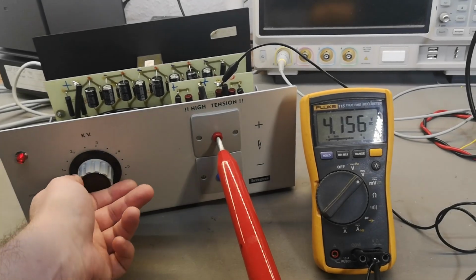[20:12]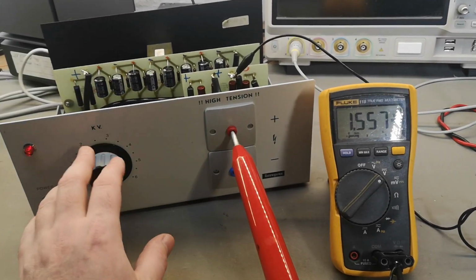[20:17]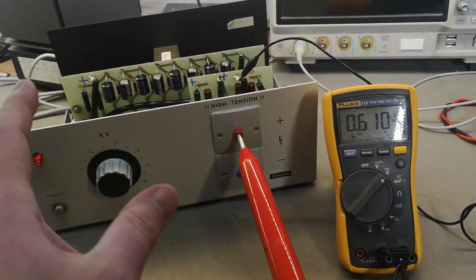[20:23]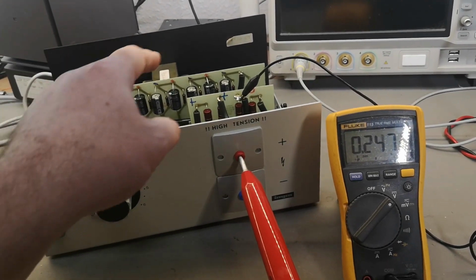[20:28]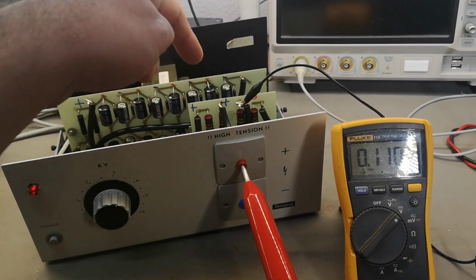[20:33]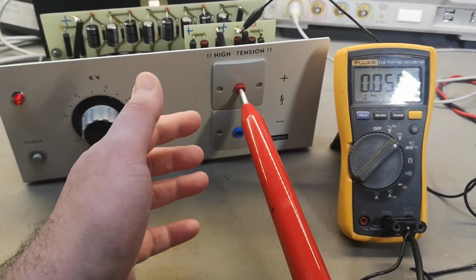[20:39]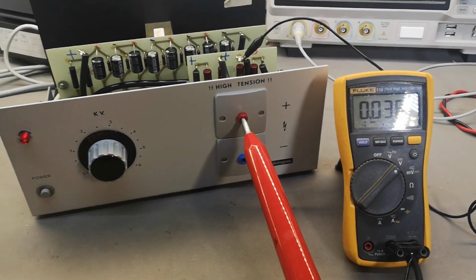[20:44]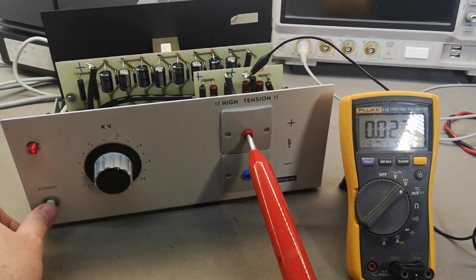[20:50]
I'll have to investigate. Using a thermal camera, you can actually, maybe you can feel this in my voice there. I was getting like a little bit tense. Because when you got this kind of capacitance here, you don't want to have an arc over on the other side of the resistors. I mean, it's perfectly all right here because it's super duper current limited. But you don't want to have it on the capacitor side because it's gonna say bang kaboom really, really loud.
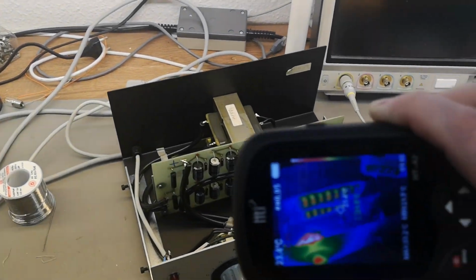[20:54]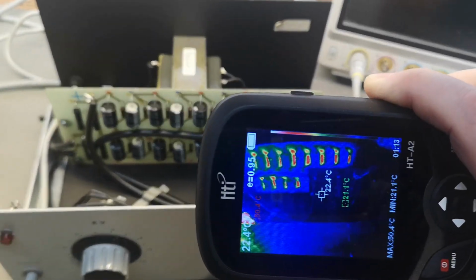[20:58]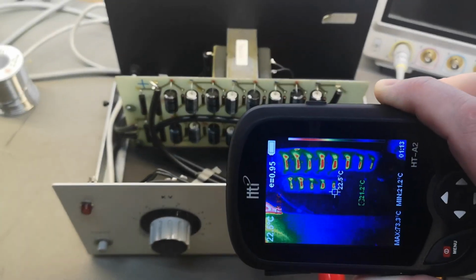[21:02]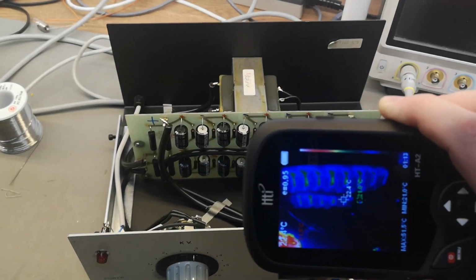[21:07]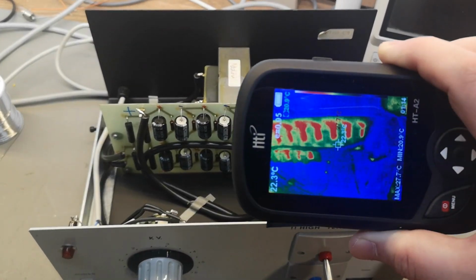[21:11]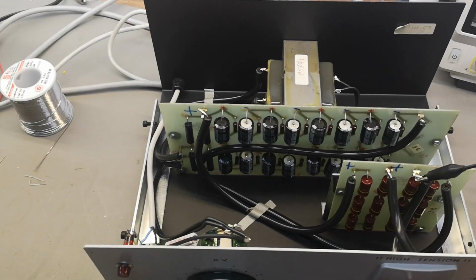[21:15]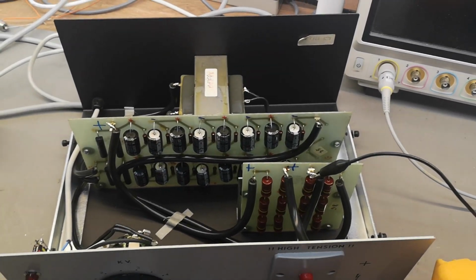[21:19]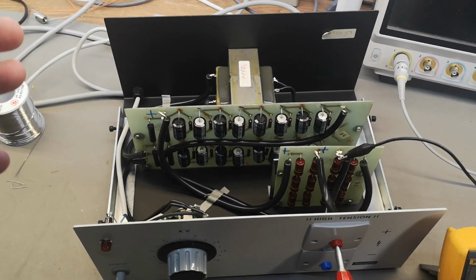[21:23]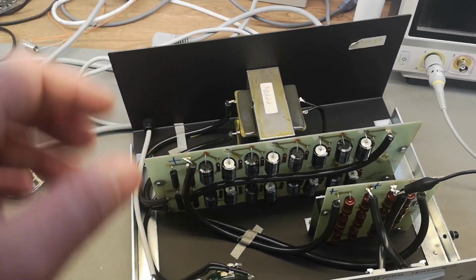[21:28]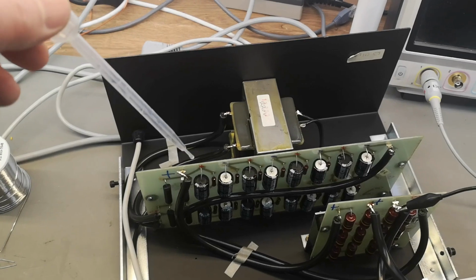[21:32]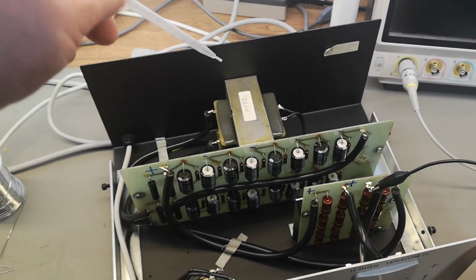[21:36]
I've just been running this at full 6,000 volts for a few seconds. I can feel that you can see this. All the 1 megohm resistors here, they're actually quite warm. And it started to make these funny sounds. And that is obviously because we are going to get a little bit of emission from all the high voltage points here, right? And that is something you can hear.
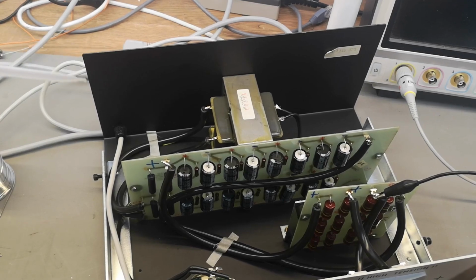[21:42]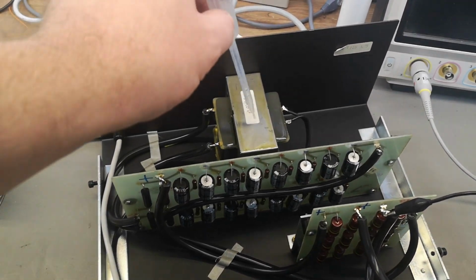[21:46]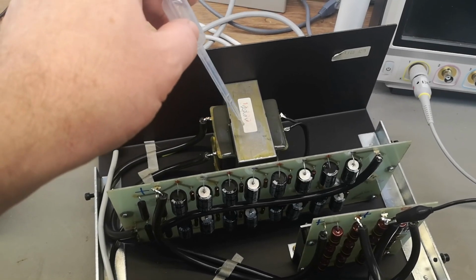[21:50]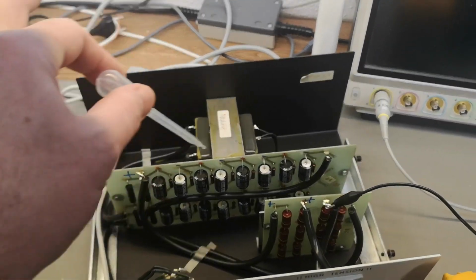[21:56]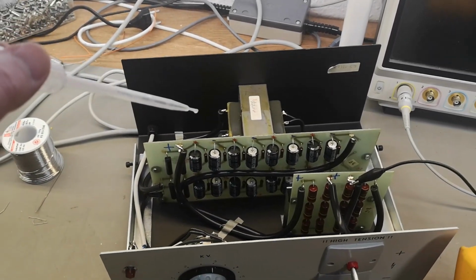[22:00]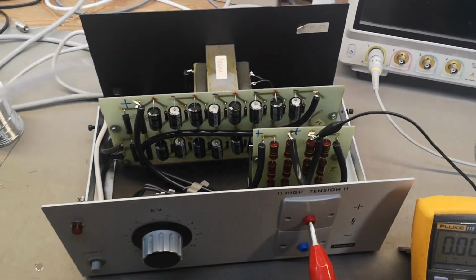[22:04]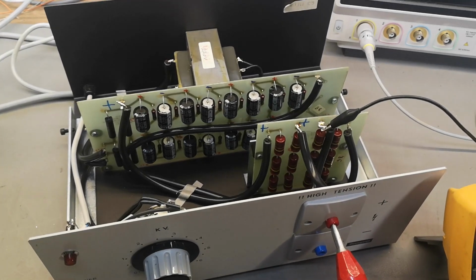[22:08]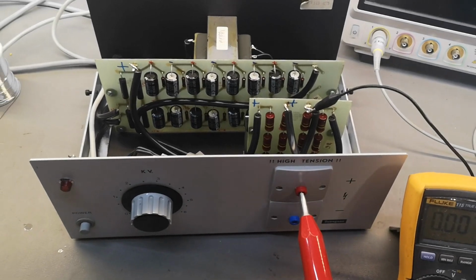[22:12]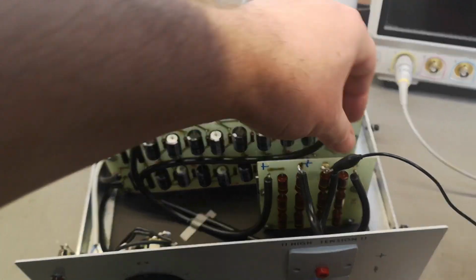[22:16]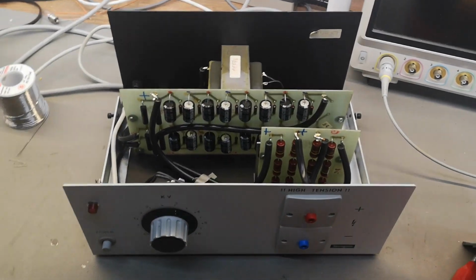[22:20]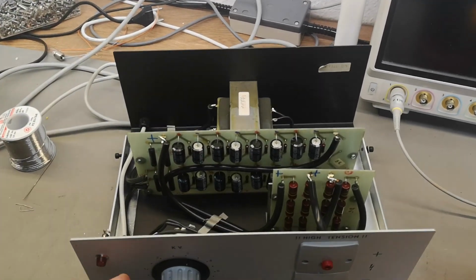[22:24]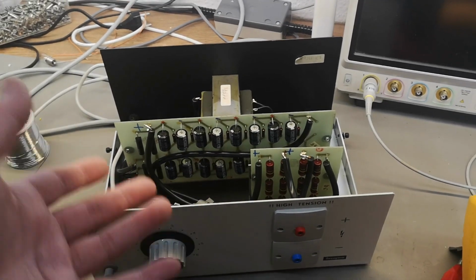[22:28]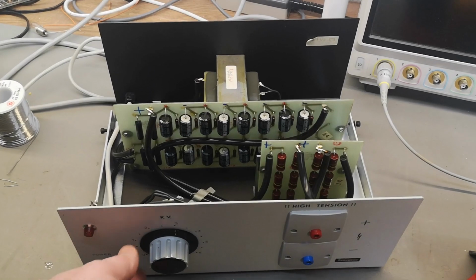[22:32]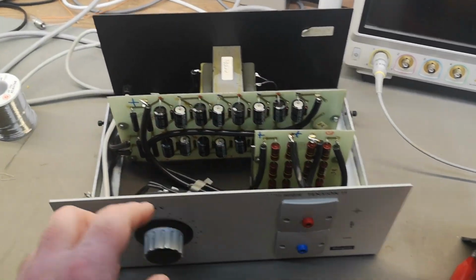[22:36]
So it sounds like this tickly sound. And there's also the transformer itself is actually humming quite a lot. So that added to this sparky kind of sound from the high voltage components just scared me a little bit. I'm just maybe getting sensitive in my old days. So sorry about that, or getting a little bit safer, more careful. Maybe it's just because I know what kind of nastiness this can do. But it's actually quite alright. This one can indeed run at full 6,000 volts for more than 25 seconds. And that's perfectly alright. You don't need to perform long-term experiments with this.
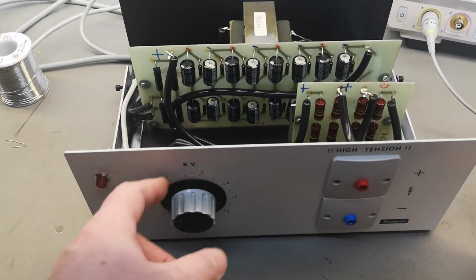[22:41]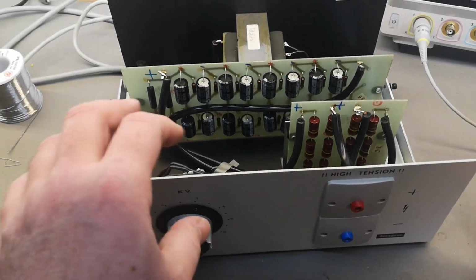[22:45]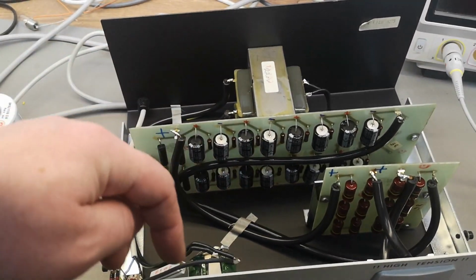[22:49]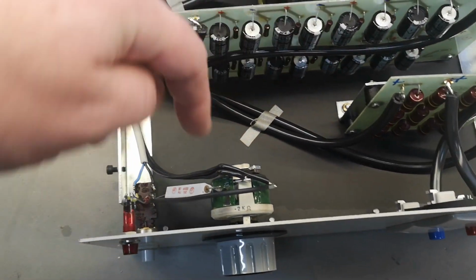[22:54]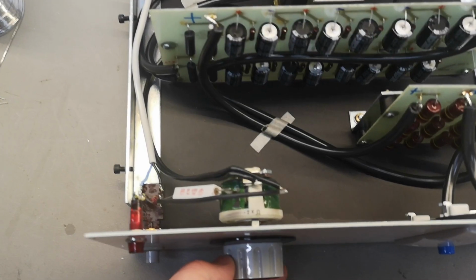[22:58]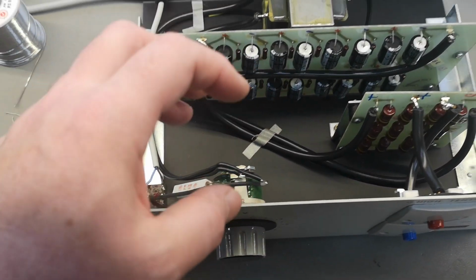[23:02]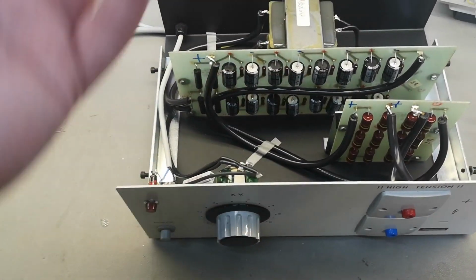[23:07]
Maybe I would recommend changing this resistor divider to one of those tiny little variable transformers you can get. There's actually plenty of space for the tiny little vario trafos, or whatever you want to call them. They're super nice devices, and then you don't have this idle power problem, and then you can run this unit all day long if you want to do that.
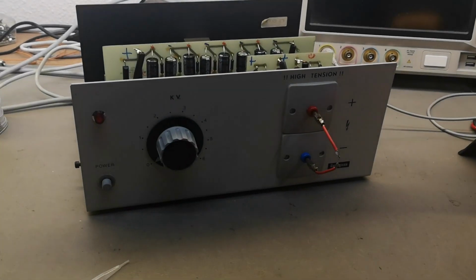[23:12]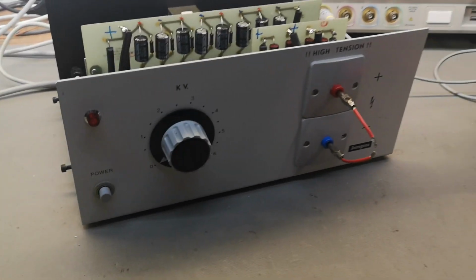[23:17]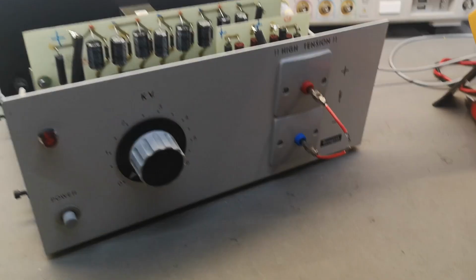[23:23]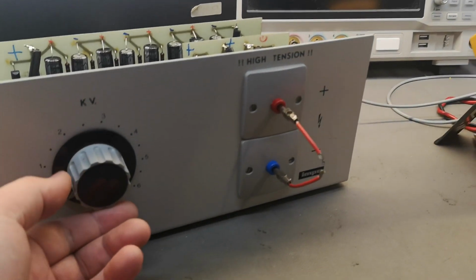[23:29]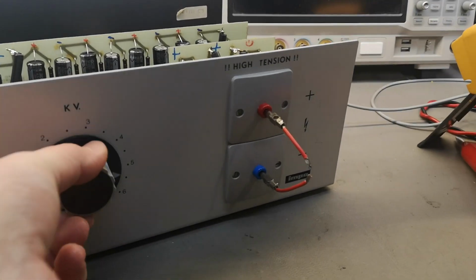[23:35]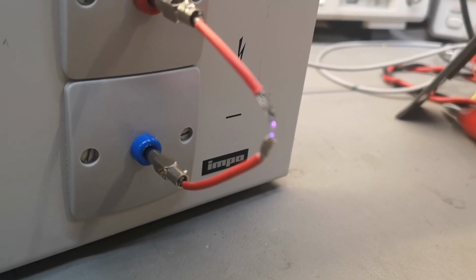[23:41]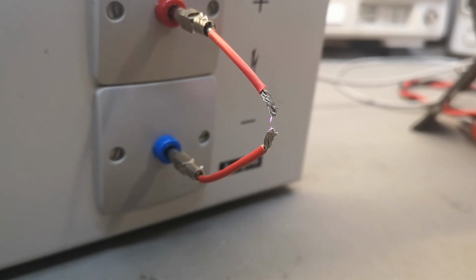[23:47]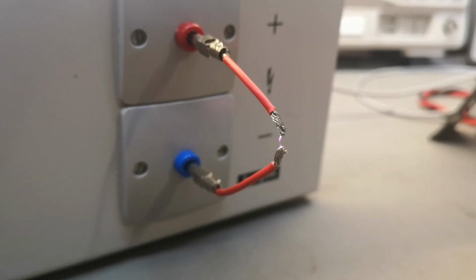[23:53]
Yeah, I feel this is going to be a real disappointment of a video if you don't see a little tiny spark before we call this done deal. So let's play. This tiny little spark is all you're gonna get. Ooh, aren't you impressed? This is what current limit can do for you.
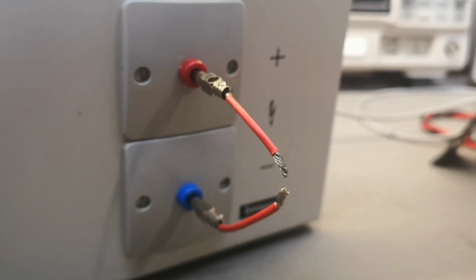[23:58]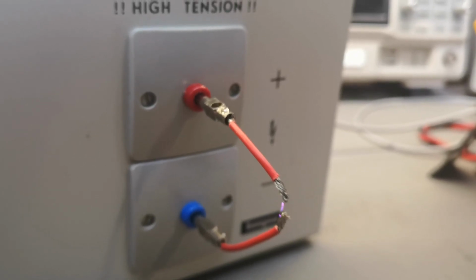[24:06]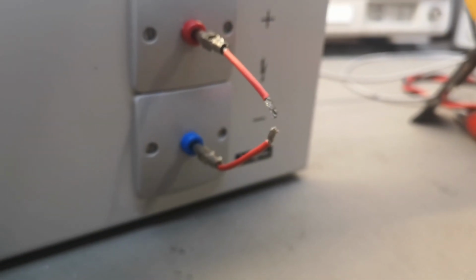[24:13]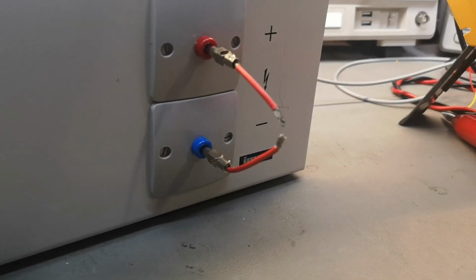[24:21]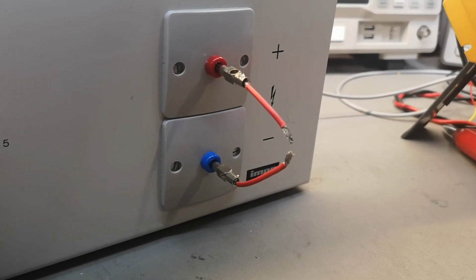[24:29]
Oh, the smell is intense. Yeah, that's what it is. If you put a capacitor on the output side here, then it's going to be a lot more fun. I'll try and see if I can focus lock. Yes, I could. Here you go. Beautiful.